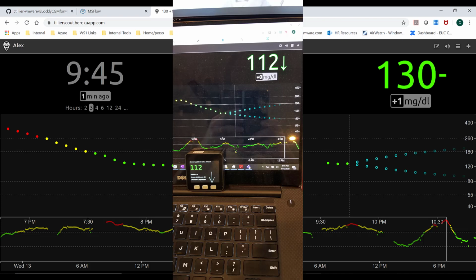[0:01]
Everybody, I'm going to try to go through the process of extracting the information from the Nightscout app and being able to publish it on an M5Stack device. M5Stack is a really simple device that in this case is going to be used only to display the information that we want to collect from Nightscout. And in my case, it's coming from the Dexcom app.
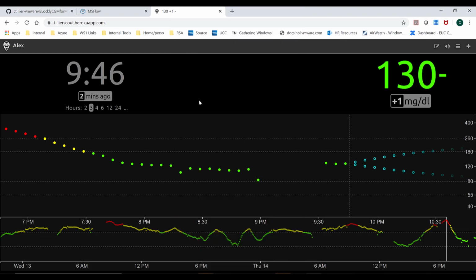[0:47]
So I'm not going to go through how to install Nightscout. There's a bunch of videos, and I'll put the links in the description. But the idea is, once you have Nightscout up and running, your Dexcom or your CGM will be uploading the information in near real time to the monitor. And then Nightscout will be able to collect that information, store it on Heroku, and be able to display that
as a website. What's nice is Nightscout has this amazing thing where it can not just display the information in graphical format and with alarms, etc. It'll also give you the access to programmatically connect to the website and get this data. So I'm going to walk that process through.
So the first thing you'll notice is that you can see the data that comes in. And these are some of the key parts that I want to extract. I want to get how long ago was my last data point. I want to know, obviously, what the CGM value is, or the blood glucose monitor value would be. And I want to see what the difference is with the prior value. So those are important things to see.
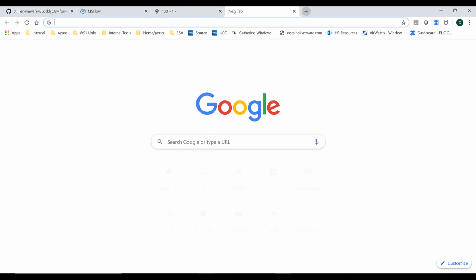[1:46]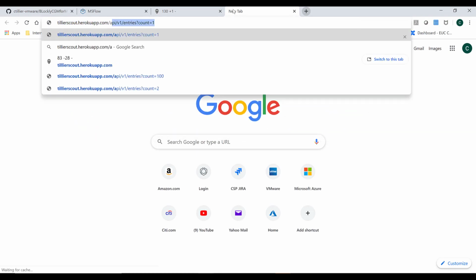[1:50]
When I go to the API, I would just do the same exact thing, but then do a /api/v1/entries. And you'll notice in this case, I'm going to get a count of just one, which means I'm just getting one line of what the last value was. And in this case, you'll see the time in Greenwich Mean Time. You'll get a weird long number here, which is actually the number of seconds since 1970.
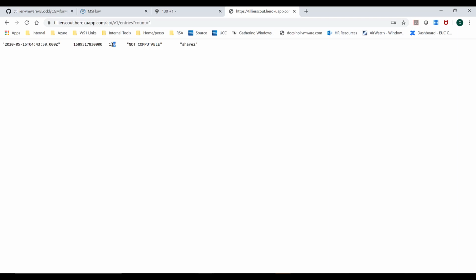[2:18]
You'll get the actual CGM blood glucose value. So this is the big number that everybody cares about. And then you'll get a trend. So in this case, it's not computable. So what I'm going to do is show you that you can actually do this. And this, by default, is measured every 5 minutes.
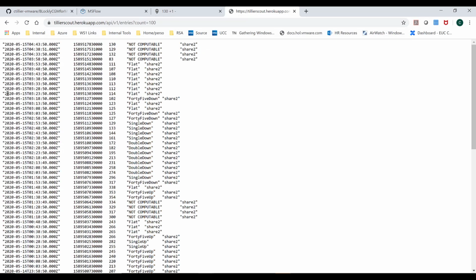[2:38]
So if I go and I say I want 100 counts, you'll see that it's actually going to show me 100 values here. So if I do 100 times 5 minutes, that's 500 minutes. I get a number of hours of data in one screen, right? And I can actually go and get more, but I really only care about the last two for the M5Stack device, because that's pretty much all I'm going to do, I'm going to compare these two lines. And this is important to understand because I'm going to have the old value and a new value. And I'll talk about that in a second.
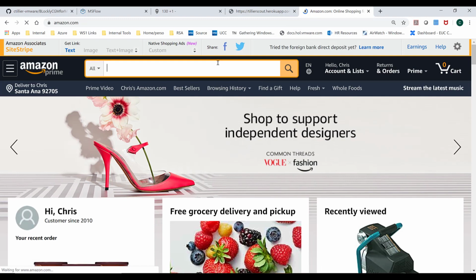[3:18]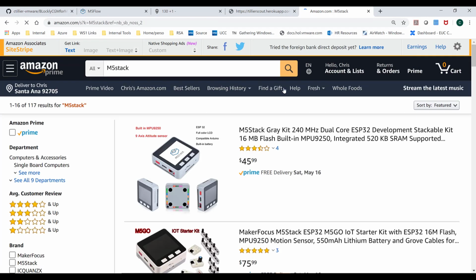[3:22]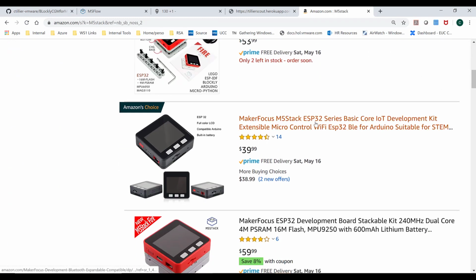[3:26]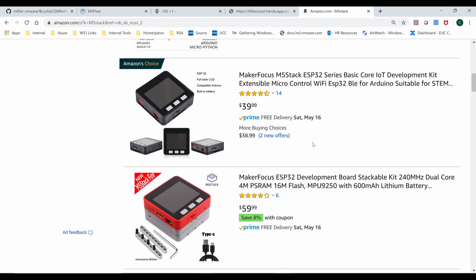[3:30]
So if you haven't checked it out, go to Amazon and get the M5Stack. And then you'll see that there's a whole bunch of different ones that are available. I personally like the M5Stack. It's one of the cheaper ones, but obviously what I'm going to show you would work on any one of
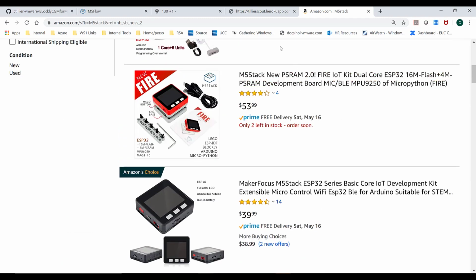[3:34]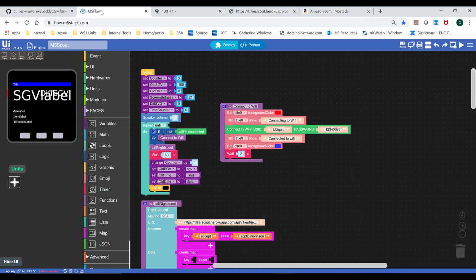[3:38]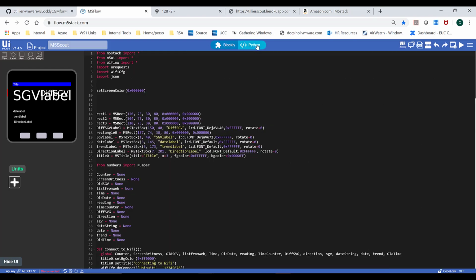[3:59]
these versions. The M5Stack works on something called Flow, which is actually a Google product, or it's a free website if you want to think of it that way, where you can actually do programming with Blockly. And Blockly is really cool because it enables you to do block level programming. So I don't know if you've done it with Lego or something else, but the idea is you can create a pretty simple program and then you can actually see the code in Python.
So I am not a programmer, even though I work in IT and I do a bunch of scripting. So this is the kind of thing I could do, but the idea is anybody can do this, and part of why I wanted to do this in Blockly was so that people can understand what I'm doing and then potentially either decide to start programming themselves or add more stuff to this, and then we can share and collaborate and make diabetes monitoring fun, however that may seem.
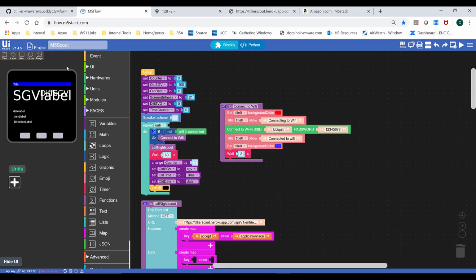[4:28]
So anyways, here on the left, you can see the M5Stack view of the world. The idea is it's just a simple panel. The resolution of this is actually 320 in width and 240 in height. So it's kind of a screen. If you think of a modern 1080p screen, which is 1920 by 1080, here it's just 320 by 240. That's important because any of our graphics are going to have to fit in that size.
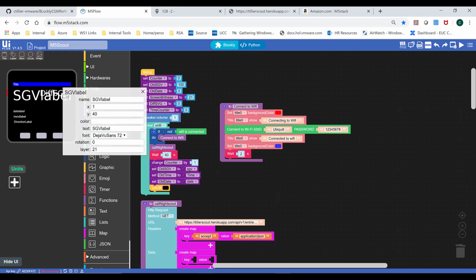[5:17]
Then you'll see that there's a title. And in this case, I'm starting to already show some of the blocks that I created. So the title is important. The SGV label, a label, is something where we can change the size of the text that's going to be used. Here you can see its position in XY values, and then also the font size that I'm going to use. I use only standard fonts, and I tried to make it very explicit what I'm doing.
You'll also see that I did something called the diff SVG, which is the difference between the prior reading and this new reading. That's how you get the +10 or +1, -1, etc. That's what I want to show, and I showed it in a smaller function on the screen with a bit smaller font. Here I strategically placed it next to where my blood glucose level would be. Then you can see I put a date label just to see how much time has gone by since the previous value, the trend label, and the direction label. So I just created a couple labels so I can see what was going on in the environment.
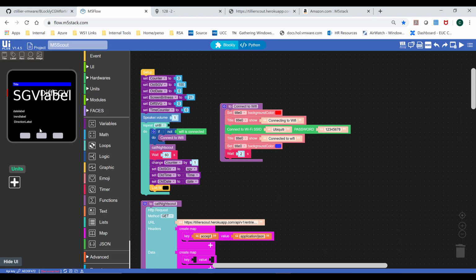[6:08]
Like any M5Stack app, you're going to start with a setup. In my case, and I learned the hard way, thanks to Scott at Google for helping me with this part, you have to initialize all your variables. A variable is just something that's going to change in programming. I name my variables to try to make them as easy as possible to read. And you have to give them a value so that they're not empty the first time you run this application. So you'll notice I created a bunch of variables.
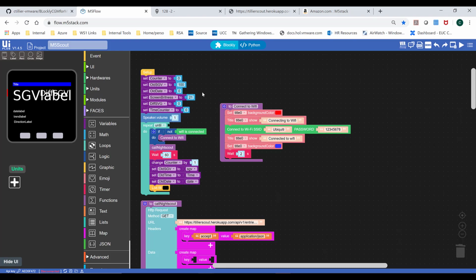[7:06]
Here I created a counter variable, which counts every time it goes through a loop. I have the old blood sugar value; I set it to 100. I don't even think I use this value anymore. I have the old date, which I set to 0, which is the prior time I checked for blood glucose. The screen brightness is super important because we realized that the M5 was pretty bright at night and it was actually distracting. So no use making it more painful than it is. Then this diff SVG is the difference between the prior value and the new value, so that's the plus that we want to check. And then the time counter is how far in time I've gone since the last time I checked.
I also set the speaker volume to 1. There are a number of things that we're going to be able to do, like the button presses and things like that, where you just want to check that that's at a specific setting so that you can connect to that and not do something else. Since this is a single app, single purpose display, I'm going to set everything, and then it's only going to do that thing.
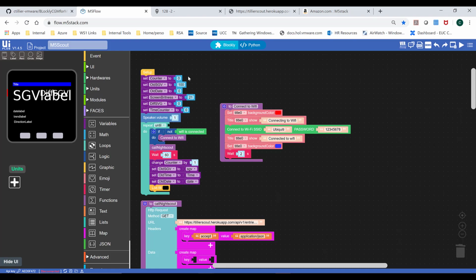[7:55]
Once that's done, you'll see that I start my main loop. This is really important because this is the main loop of my program. You'll see it's actually very short because I call functions when I want to do something specific. In this loop, I say do this until, and in this case, I have an empty block. So I could say, hey, until my program finishes, until the end of time. In this case, I never gave it a reason to finish because I always want this program to run.
So the only time the program would actually end is if the device lost connectivity to Wi-Fi and had to be rebooted, or if it ran out of battery because it wasn't plugged in. Those are the only two conditions I can think of where this thing would stop. The idea here is the first thing I do is connect to Wi-Fi.
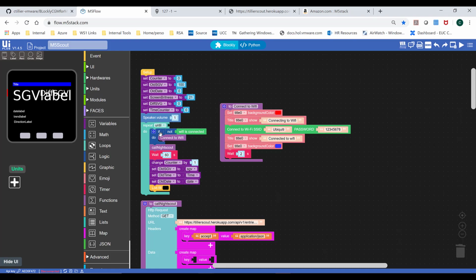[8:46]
So I check. This is called a function. To set variables, you'll see I can go to variables here and you'll see all the ones I have set. And then I'm going to call a function, which is going to do something. So the first function I call here is connect to Wi-Fi.
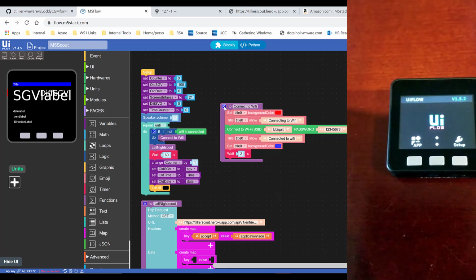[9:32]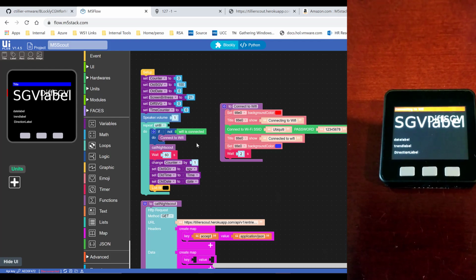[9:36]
Here I'm going to switch the title bar from blue to red, and say, hey, I'm connecting to the Wi-Fi. In this case, I put my Wi-Fi SSID and password. Once I've connected, it's going to say, hey, I'm connected to Wi-Fi. It changes back to blue and waits 2 seconds so you have time to read it, or else it goes so fast you wouldn't be able to. So usually the device boots up, says it's going to try to connect to the Wi-Fi, connects, and then it starts running.
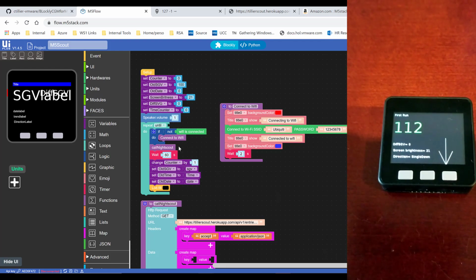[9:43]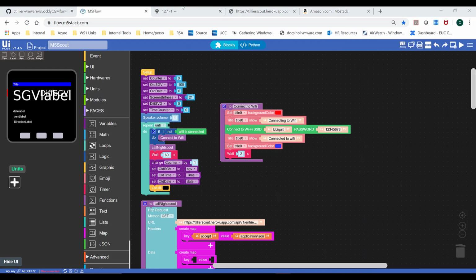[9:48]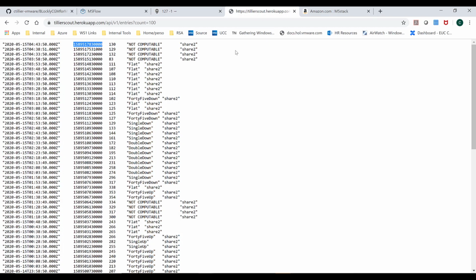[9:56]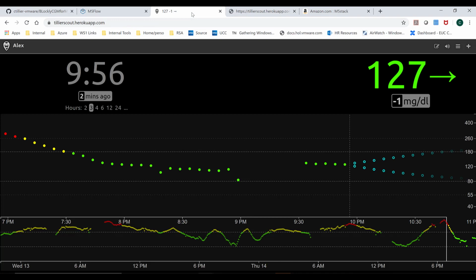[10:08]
The next part is the major loop, where I actually call Nightscout. I'm not calling the web page where I see all the data. I'm calling the API page, and I'm just calling one line. This is important because I don't know enough about programming to worry about the difference between these two lines. I just call the line over and over every minute and say, hey, how am I going to get the data?
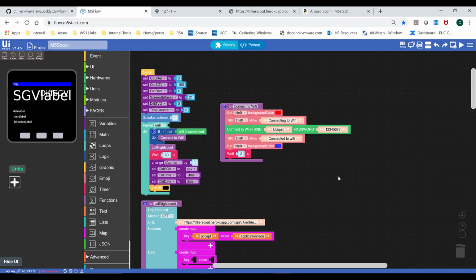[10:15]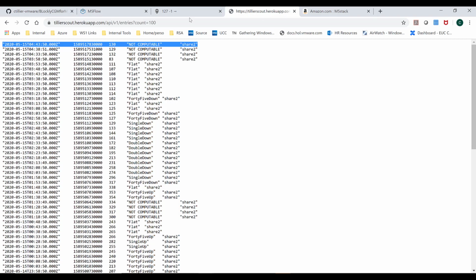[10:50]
For those of you who are having fun with M5Stack, you can actually learn how to do API calls. In this case, I'm calling Nightscout. Whenever I do a function, I put it right here. Since it's my main loop, I put it in the main body of the page. Here I call Nightscout with a GET request, which means I'm pulling information from a web page. It's very important to put the URL you have for your Nightscout app. It should be exactly the same as what I have over here. I just want that one line, which is exactly what I'm calling once a minute to see if there's anything new.
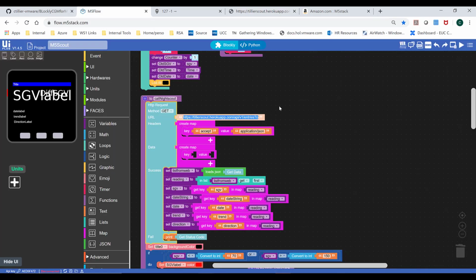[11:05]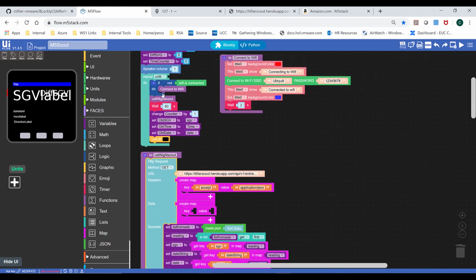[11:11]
Here it's important to see that I call the function, and when it stops calling the function, it does a wait, and then it keeps going down this flow, starts back at the top, and just loops through this over and over.
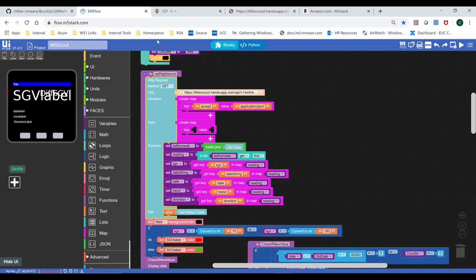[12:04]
Now I get that one line, and it's going to create a map. This is important because I'm actually calling a JSON file, getting that information and putting it in another variable. The variable we're calling it is a list, the list from web, or I could call it list from Nightscout. The idea is I'm getting a list and loading all the data that comes back. If I look at this data, it's going to be these 5 fields, and I'm going to call those 5 fields and then name them. So in this case, I'm going to create a list into JSON, and then create a list from web.
And I'm going to put it into this file. And then I'm going to set all of the variables to the reading that are set by the keys. So this is documented in the Nightscout application API, where the SGV, sugar glucose value, is set to SGV. And I've just been lazy and literally copied the value to the name of the variable.
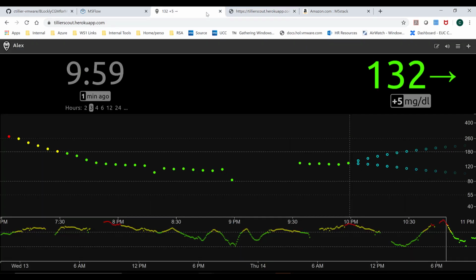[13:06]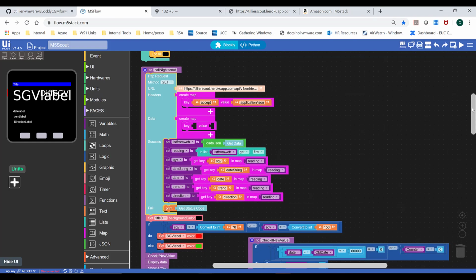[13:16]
Then I get the date string, the human readable date, right? That's the big long date that's set here, where I can see the year, month, day, and hour, and 00Z is the time zone, right? That's Greenwich Mean Time. So there too, I haven't found a function in the M5Stack to actually translate that directly, right? There's some things in Python that can translate it directly, but I haven't found that in Blockly or M5Stack. So maybe V2 will have that. But the idea is today I'm just seeing the data in raw format.
Then I get the date. So the date string was that long one. The date is actually the time in seconds since 1970. That's this big number. And believe it or not, it doesn't look like it changes, but it actually changes all the time. So it changes every 5 minutes. I don't think they go down to the millisecond if we wanted to, but I do that.
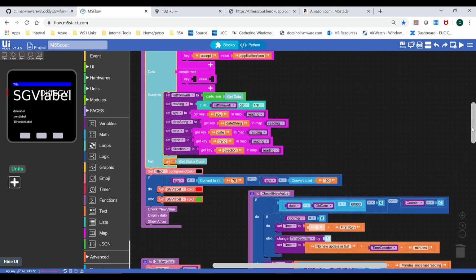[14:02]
And then finally, I look at the trend and the direction. So the trend only gives you a number from 1 to 4, and I think it translates to, is it going up or is it going down? I'm not using that in the display of the M5Stack, even though I have that information. So we'll see at another time what I do with that. So that's the get command that calls the Nightscout app and gets all the information that we need.
All the rest of the program is all about how to display this app in the right format. So the first thing that I do is I actually flush the whole screen back to black. And that's important because when I draw the arrows and stuff, it's kind of fun on M5Stack. If you don't erase everything, it'll just pile on top of it. And so I need a way to make sure I have a blank screen. On a TV, that goes so fast that you actually never see it. But on this thing, you can actually see it.
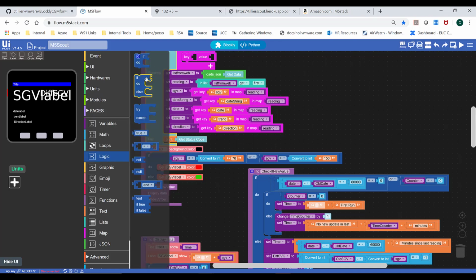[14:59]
And what I do here is now I set a condition, right? So this is a condition. It's called logic in Blockly code. And the idea is I'm going to say if something happens, then do something, right? So if I go into my logic, I can see that if something happens, I can do something. And if it's not true, then I'll do something else. So in my case, it's pretty simple. If the blood sugar level is between 70 and 150, which is what I'm expecting it to be, then the color is going to be green. If it's outside of that range, then make the color red, right?
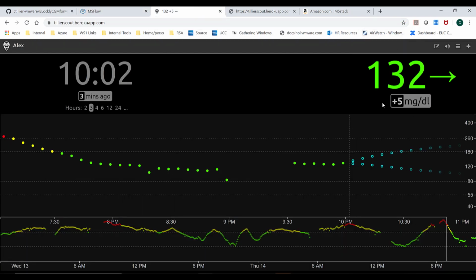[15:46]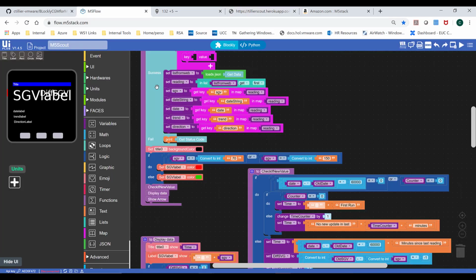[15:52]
So here you can see if sugar value is smaller than an integer, which is a number, 70, or if it's bigger than the number 150, then make it red. And if it's not, then it's green, which is exactly what it looks like when I go to Nightscout, right? So I try to mimic the design of Nightscout in this flow.
Then I do a number of different functions. The first thing I'm going to do before even showing anything on the screen is I'm going to check to see when that value was created. And so then I go through a pretty extensive loop to see what information I have. And so here you can see that I have the check new value function that's listed here. And what I do is I check the date minus the old date divided by 60,000, and I see if it's equal to 0. What that simply means is if the date that I have from a minute ago is equal to the date that I have right now, and they're equal to 0, that means I don't have any new data. So I don't really have anything to do because there's no information.
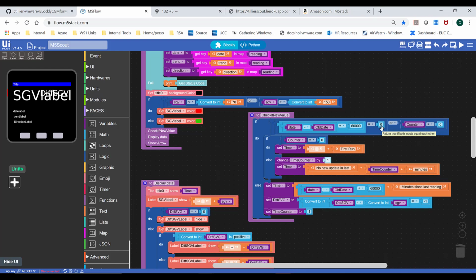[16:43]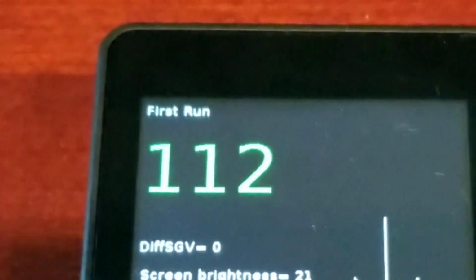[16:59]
So the only thing I'm going to do is, well, I'll show you in a second. So here I'm checking that if it's equal to 0, which would mean I don't have any new data. If the counter is equal to 0, that also means that it's the first time I run this program since it booted. So I need to account for that because remember, I'm only looking at one line of data. And so if I only have one line of data, then I can't do a subtraction to see what the change was.
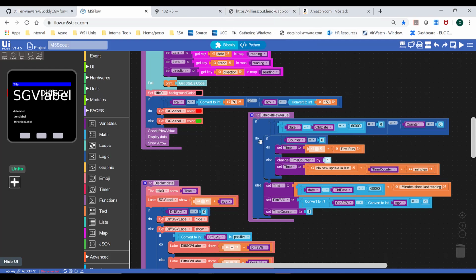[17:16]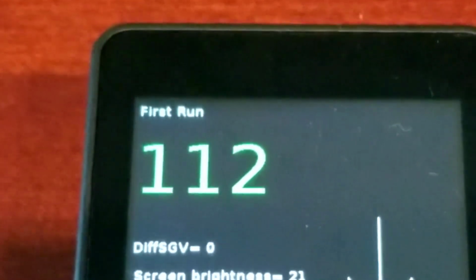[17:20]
So here I do a sub loop, if you want to think about it. So if the counter is equal to 0, then set the time to first run. And remember, time is what actually shows up in the title. If it's not the first run, then do this. This is important. The time is going to be the counter, and I'm going to add 1 minute because I run this once a minute, and I'm going to say no new update in the last minute. And I'm going to show that in this new variable.
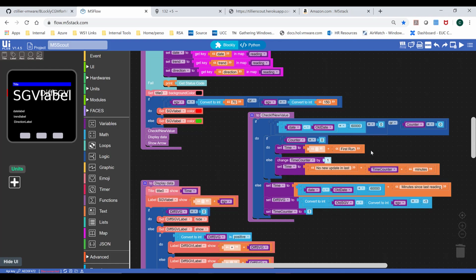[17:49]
Else, what that means is I do have something new, and I'm going to say this is the difference in time in minutes, right? So it's the minutes since 1970 minus the minutes since 1970, right? So it's a ton of minutes. But it ends up being usually 5 minutes since the last reading. And then it's going to convert that time, do it minus each other, and times it times -1.
Why is that important? Because I want to know the difference in the blood sugar value. So I'm going to take the new blood sugar value minus the old blood sugar value, and I'm going to times it times -1. And that's important because I want to get negative values if the number is going down. And then I'm going to set a counter here to 1 so that if I go through the loop again and there's still no new data, then I can say it's so many minutes since the last read, right? Remember that time? So anyways, now that I understand what data I've gotten, I can go and display things.
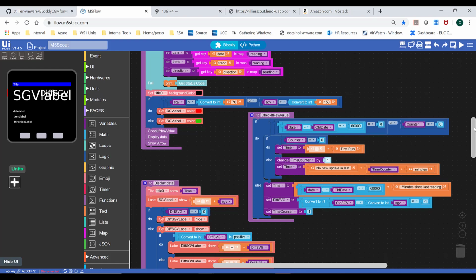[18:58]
So here I'm going to go down to the next part, which is display the data. So here, what's the data that I have? Well, I have the time of when that last value was collected. And so we showed you that you can have either the first run or however many minutes since the last collection of data, or however many minutes since it last got updated, right? Those are the 3 options.
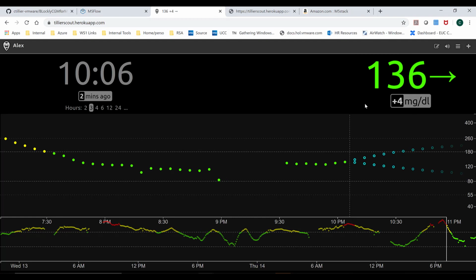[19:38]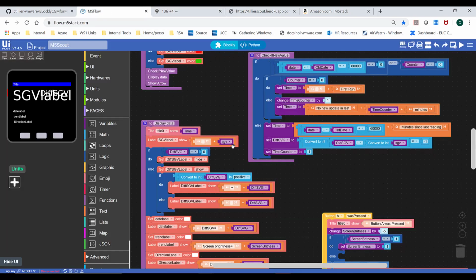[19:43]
Then I'm going to show what the new blood sugar value is. And that's the most important thing. That's the big number that's going to be in green or red right in the middle of the screen. This big 136 in this case. So in this case, that's what I'm showing, right? At the end of the day, every time what I want to show is the big number that I got, which is the main part of this command.
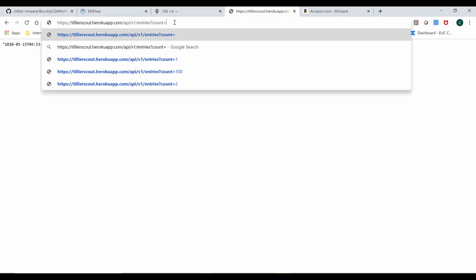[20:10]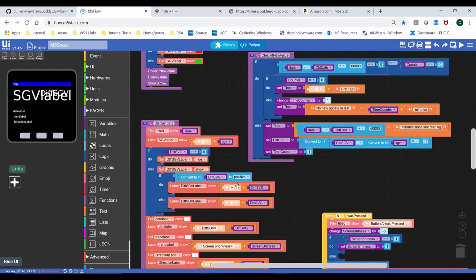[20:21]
The next part is going to be: is the number positive or negative? In order to get the plus, here you can see +4, I have to calculate that because it's not showing here in this line. So I have to see what it was before. So if I just do ×2 here, you'll see that I got 132 and then 136. So I did the math and I said, oh, it went up +4. I did the calculation to do that. And so here I have to show +4.
Then if the number is negative, the negative is actually going to show up automatically, so I don't have to add anything to the front of the label. And then finally, what I'm going to do is I'm going to make sure that all my labels are white, so that since I filled my screen with black, whenever I publish something, they're white so that I can actually see it.
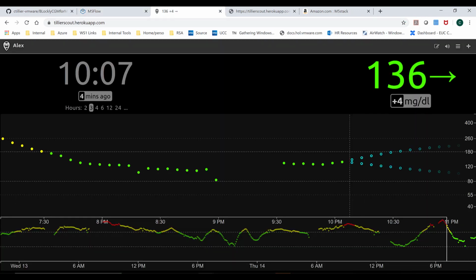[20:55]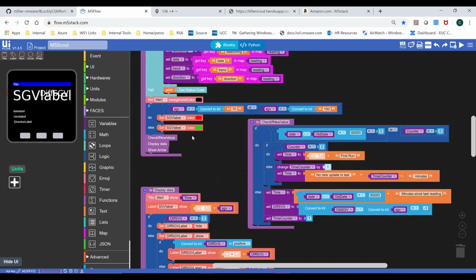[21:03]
And the last part of my call is showing the arrow. So this is the trend arrow that you see. You can also see it here on the Nightscout app. I have an arrow in the calls that I do as well. And so in the app, I actually went through and created arrows.
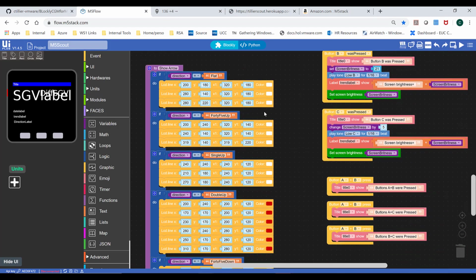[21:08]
So in Blockly, you can do XY coordinates to make lines. And so an arrow is just simply 3 lines. So I had fun recoding how to write lines. And you'll notice that I created a flat line, a 45 up line, a single up line, a double up line, and the double up lines show up in red.
And then I do the same process going down, right? 45 down, single down, and then double down. So whenever the arrows are double up or double down, they will actually show up in red.
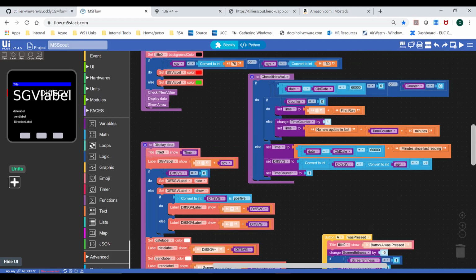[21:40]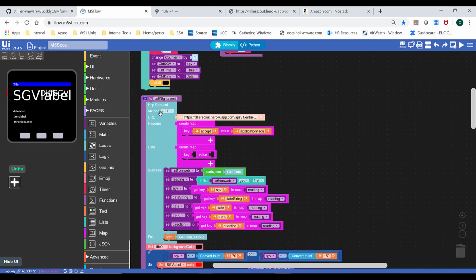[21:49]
And then the process starts pretty much all over, right? I'm now at the bottom of my loop, and so I go back to the top of the loop. I go back up to the top, way up here, and I wait 60 seconds. So that's the 1 minute that I'm going to wait between everything. And the idea here is I'm going to add a counter, and I'm going to add 1 to it so I know how many times I've gone through this loop.
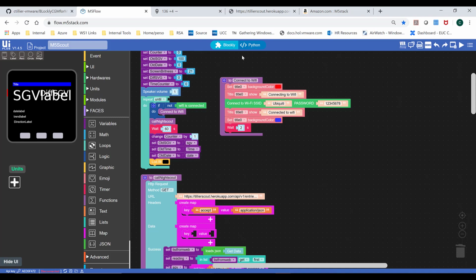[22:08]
That was more for me for checking to see if I was iterating through all my loops, but the idea is I have that information and I can display it. Then I'm going to set the old sugar value to the sugar value so that I have whatever went through that loop the first time. Remember, I'm only getting 1 line of data each time. So I don't know if that's the right way to do it, but that's the way I do it, and it works great. So now I set whatever was there before to this value so that when I collect it again, I only get the latest value.
Then I'm going to set the old time to time so that again, I'll be able to do a comparison, and then I set old date to date, again for the comparison. So that's when now I've waited 60 seconds. I've gone through the whole thing. I clear the screen and I start all over.
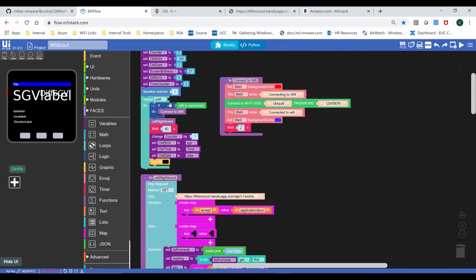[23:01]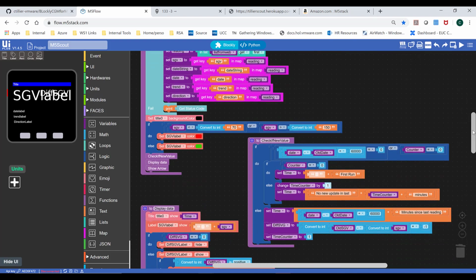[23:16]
So here it's going to start and check that Wi-Fi is connected. Normally it should stay connected. And if it's not, it's just going to run through the connect to Wi-Fi again. Then it's going to call Nightscout. And here you can go and see, and so on and so forth forever, until the device disconnects or it gets rebooted.
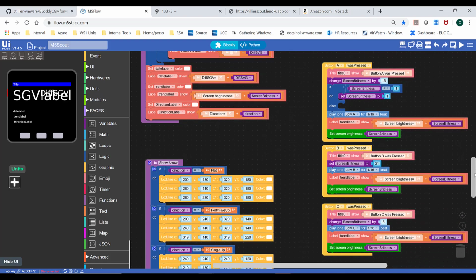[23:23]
One of the things I did for fun was also create a condition for when buttons are pressed. One of the things that was clear is my son was getting annoyed at how bright the screen was. So I was like, oh, one of the simple things I could do is push a button to make the screen brighter or less bright. And so button A makes the brightness go down by 5, and button C makes the brightness go up by 5, and button B just resets it back to level 21.
And the reason I did 21 was because if you do level 0, it actually blanks out the screen. So I don't want to blank it out. I want it to stay at a minimum of 1. So the idea is it'll go down by 5, but if ever it gets lower than 1, it just sets it back to 1. So if you push the button 50 times and you're now at -250, I would want to be at level 1. So it just stays very dim.
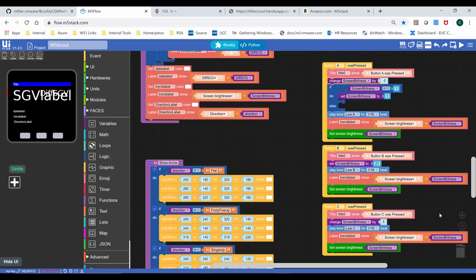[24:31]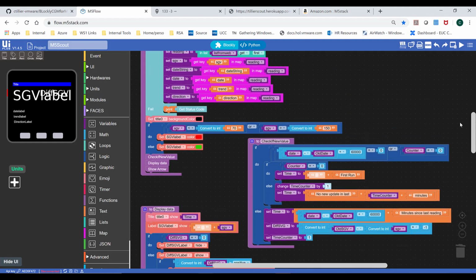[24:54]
I did not do that on the brightness-up side. I don't know if it gets much brighter than 100, but even if you press the button 50 times, I don't care. It'll just go as high as it can. And then if you press button B, you'll just go back to level 20 or level 21. And I do show screen brightness on the display. So you can see here, I show the screen brightness. So anyways, that's 25 minutes of how to write the Blockly app.